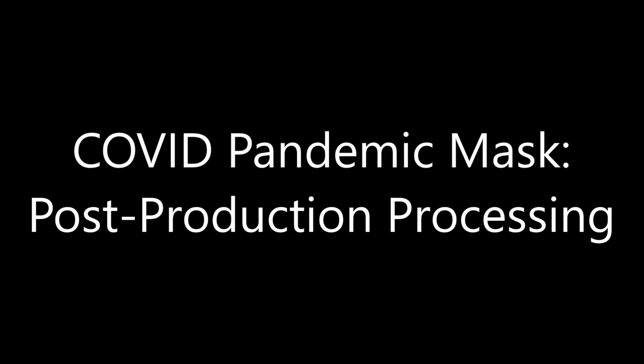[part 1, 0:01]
This is the video on post-production processing tips. We'll go through molding it to your face, sealing it, sanding or foam, and then wearing it over a surgical mask or polypropylene layer of material.
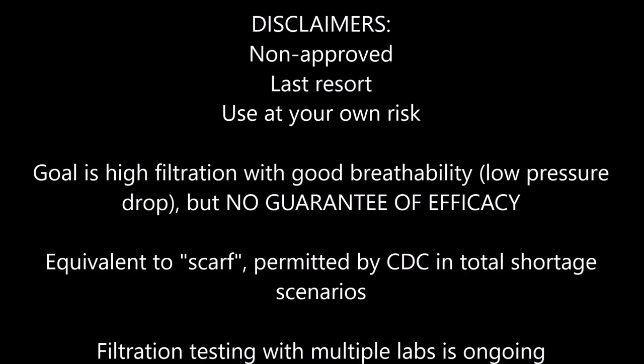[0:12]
These are non-approved last resort masks. Our goal is to make the best mask we can, but offer no guarantee of efficacy. Use completely at your own risk, and do not use if you still have any other masks available.
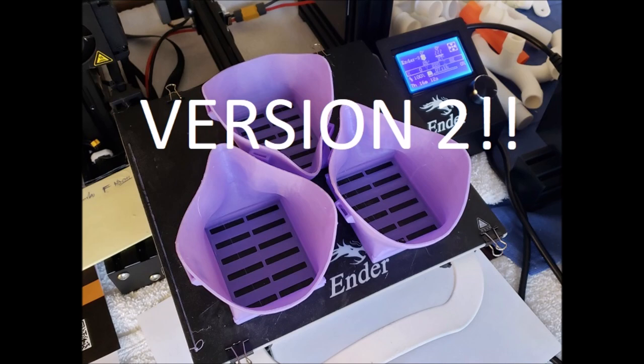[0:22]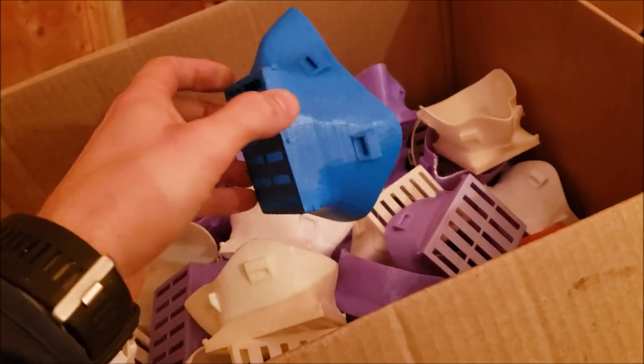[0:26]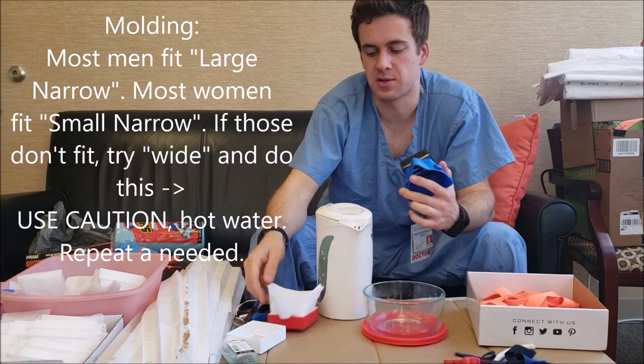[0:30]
Please see Thingiverse for version 2. It has a deeper area for your nose, uses less material, prints faster, and has two strap attachment points, among a few other changes. Okay, let's go over how to mold these masks to your face.
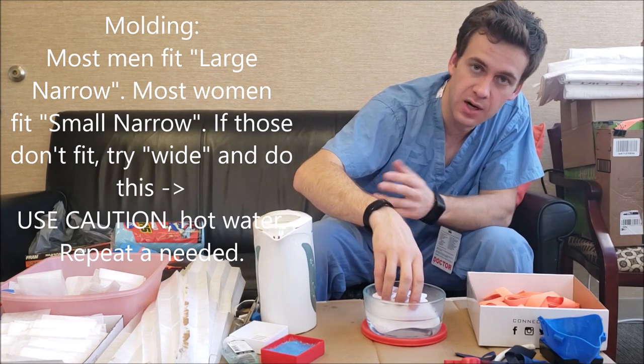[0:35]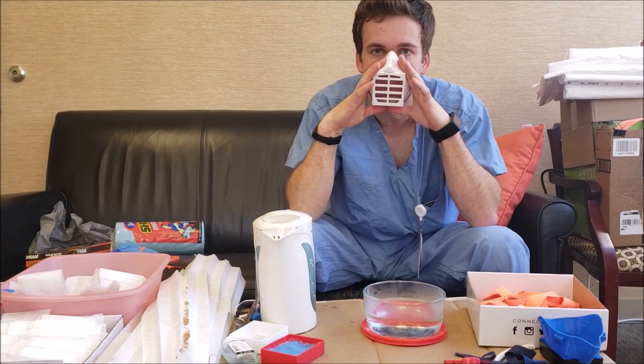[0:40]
Hot water. Submerge for 5 seconds. Be careful not to burn yourself. Now I'm just pressing the nose in and holding it there like you mold a mouth guard.
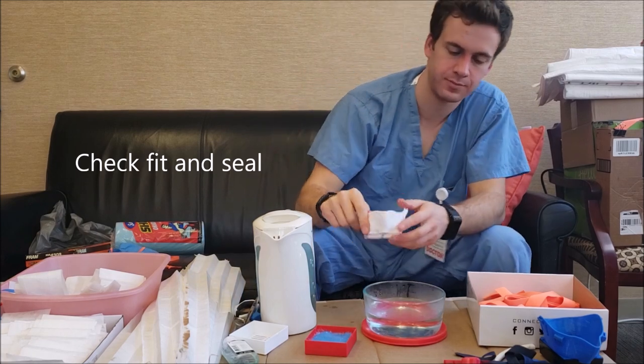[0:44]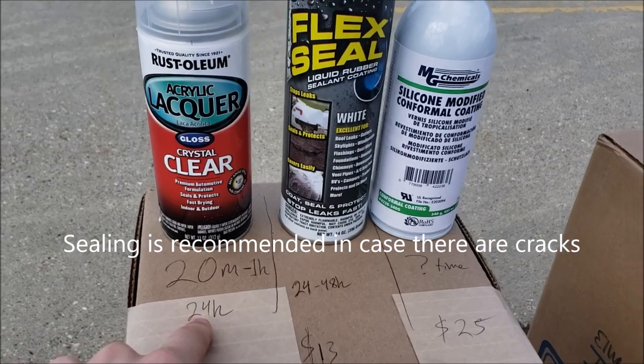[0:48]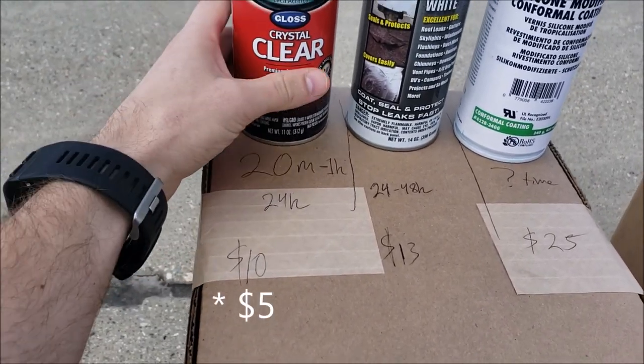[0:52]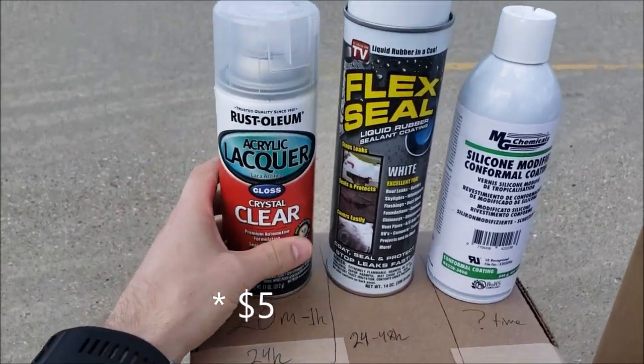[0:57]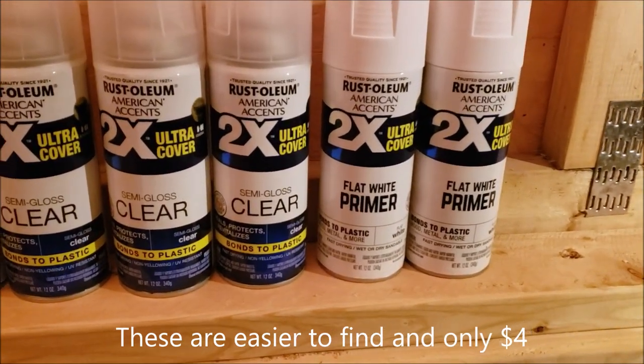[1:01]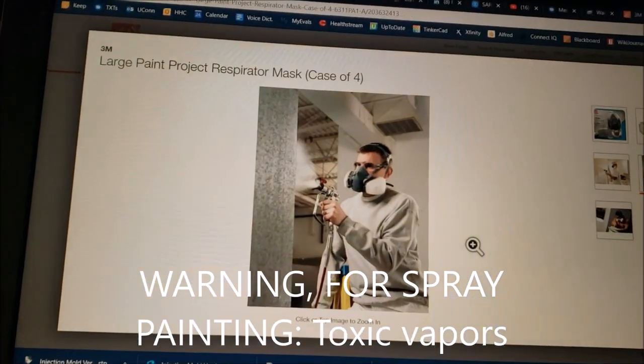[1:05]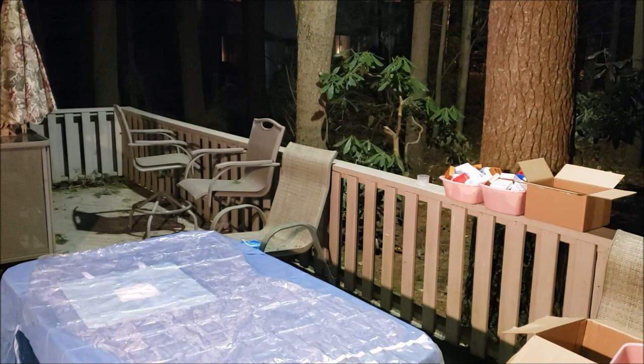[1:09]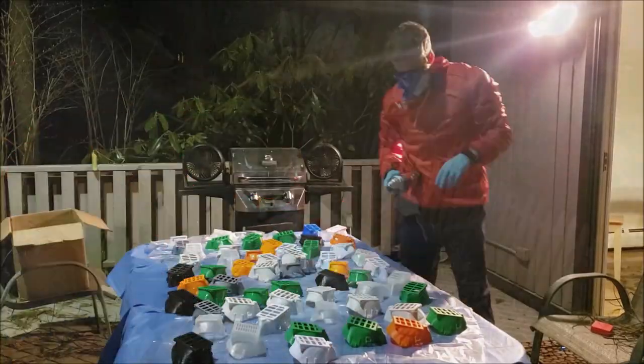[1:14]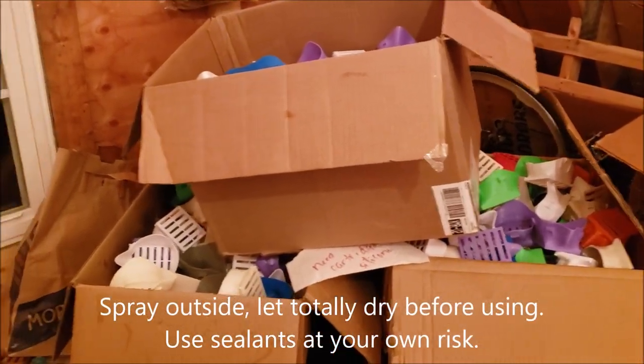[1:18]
I'm only going to put this on the outside. This is what you want, an organic fume paint respirator. They're sold out at Home Depot. Luckily, I have a breeze and I'm standing upwind. So far, these have been 48 hours, and the odor is now extremely faint. We'll probably let them go a few more days before we package them and ship them.
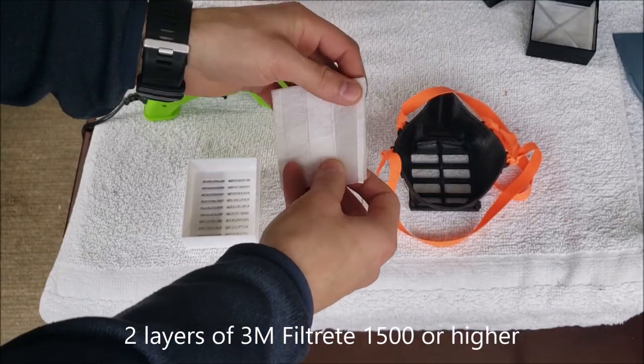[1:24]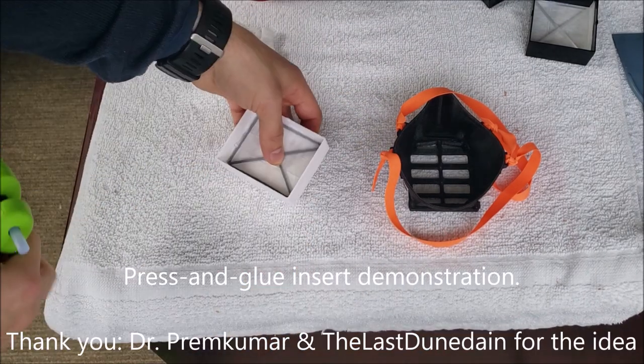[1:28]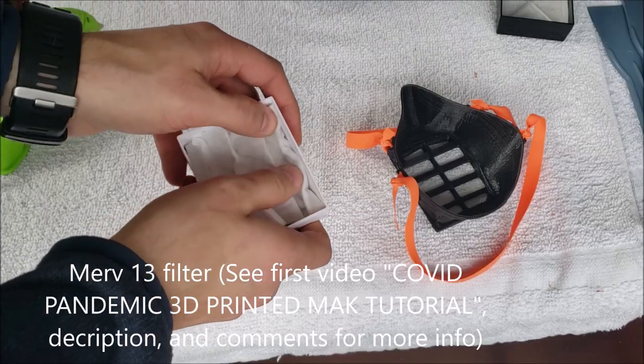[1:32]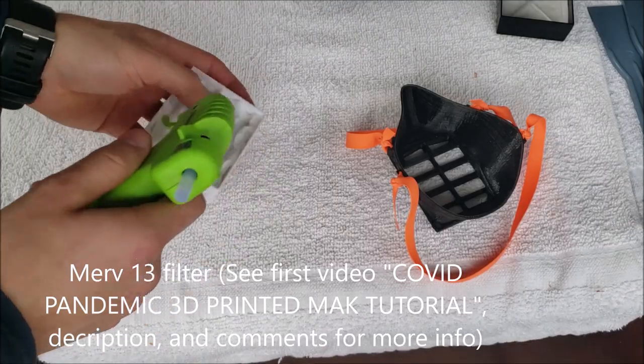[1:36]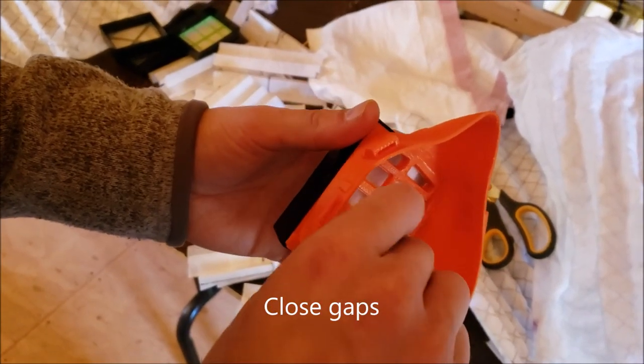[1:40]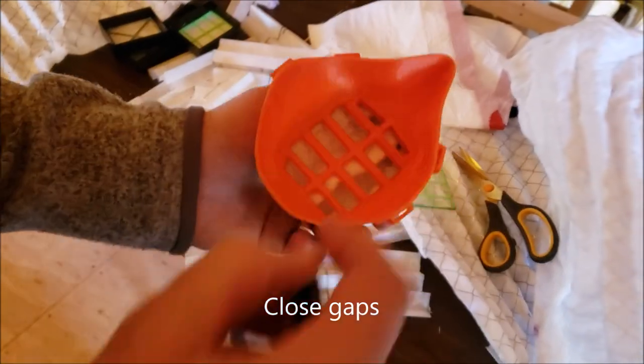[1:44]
Fold it over, or use two separate pieces for two layers. Hold that in place for a few seconds till the glue hardens. If the frame holds it right up to the edges, that should be good. Otherwise, you can seal around the edges. If there's any gaps, you can push the material from here once you've installed the filter and make sure it's right along the edges.
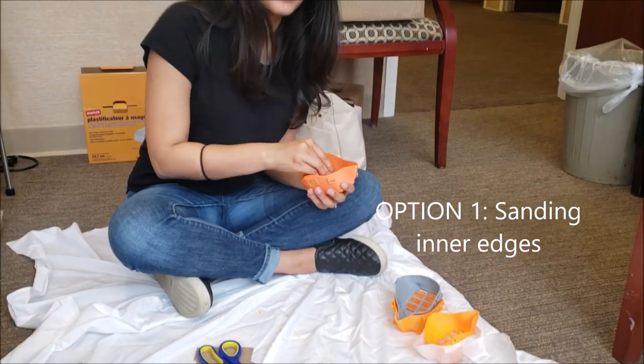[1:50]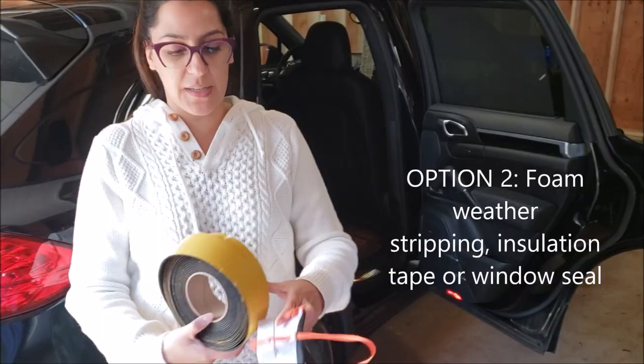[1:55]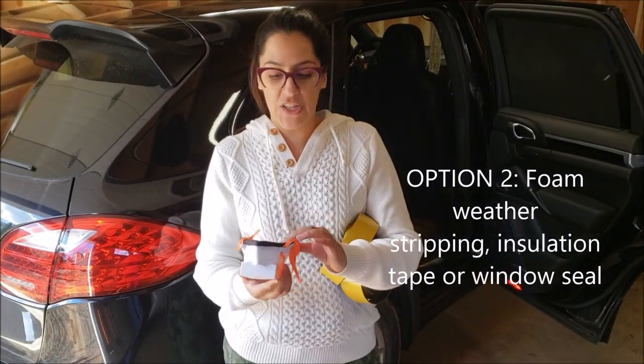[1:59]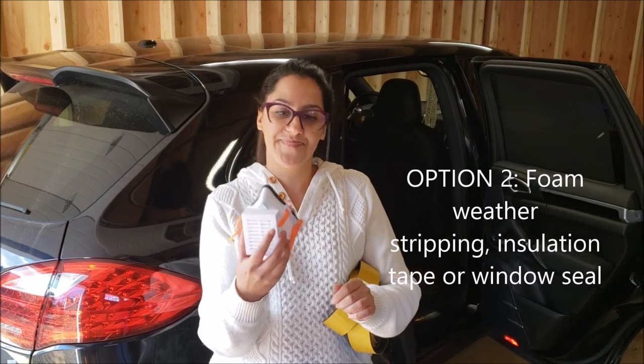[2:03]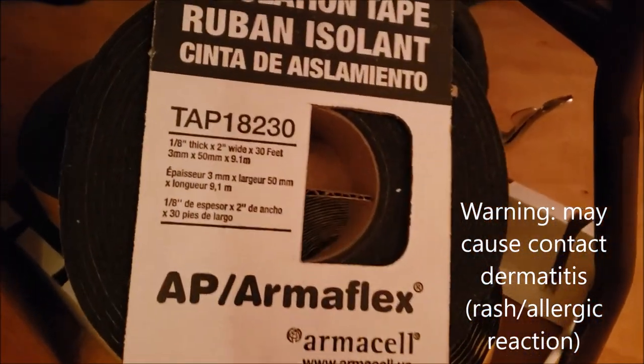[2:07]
It significantly helps comfort to sand the inside of the nose as well as the interior. Simple weather stripping from Home Depot, put it over the edge, and with this we were able to get various face shapes to pass fit testing. Awesome. The exact foam is this, AP/Armaflex TAP18230.
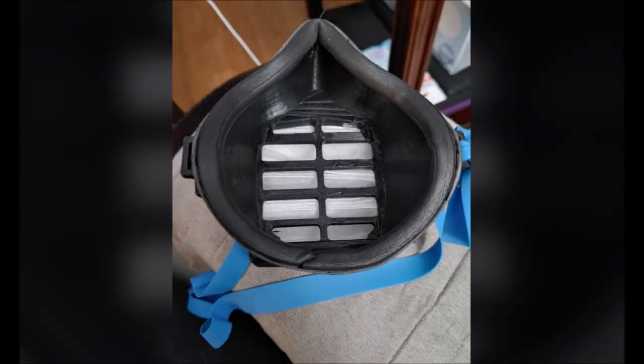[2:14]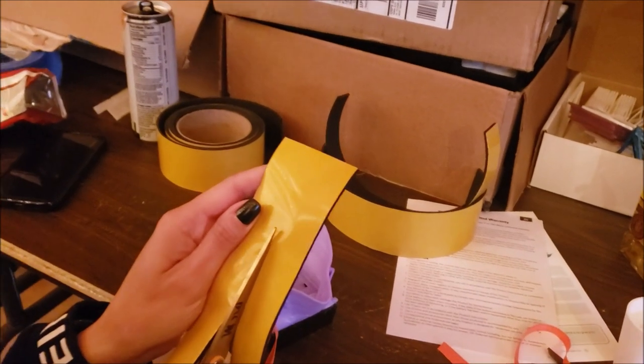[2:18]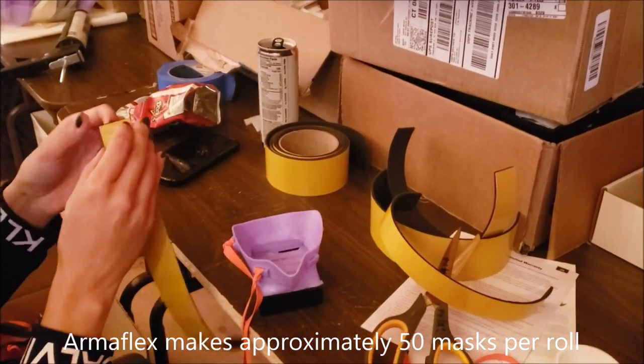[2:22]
This is another option pointed out to me by Officer Mills from the Milford PD. He's making these and sending them to Montefiore. You can make 50 masks from one roll of this on Amazon. So you cut lengthwise, measure ahead of time. This material is about $12 or $13.
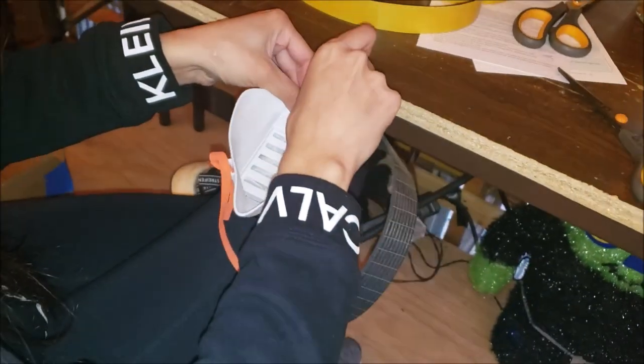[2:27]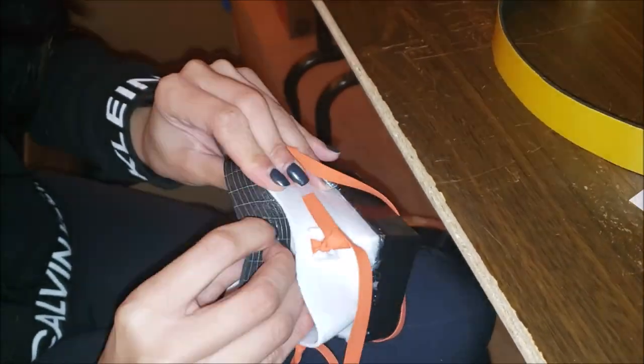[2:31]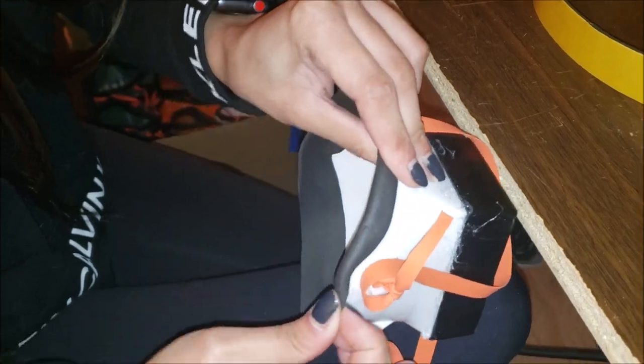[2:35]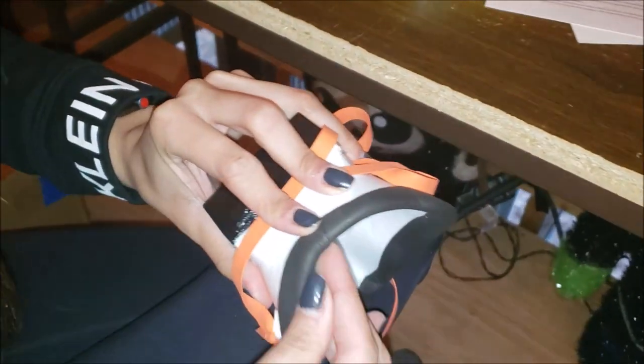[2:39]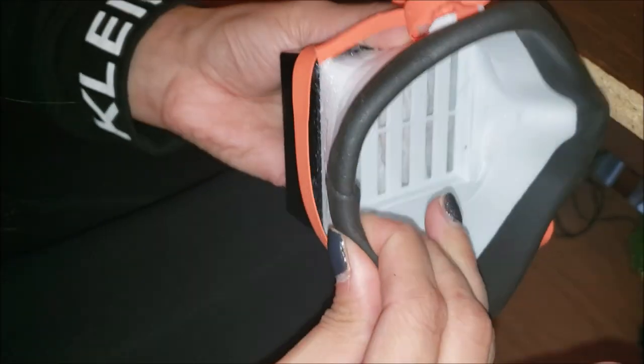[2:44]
Dr. Gill is going to show us how you install the Armaflex around the edge. So if you carefully follow the contour of the mask, you can then go around the edge and carefully fold down and press. You want to line those up perfectly or even slightly overlapped so you don't have an air gap there.
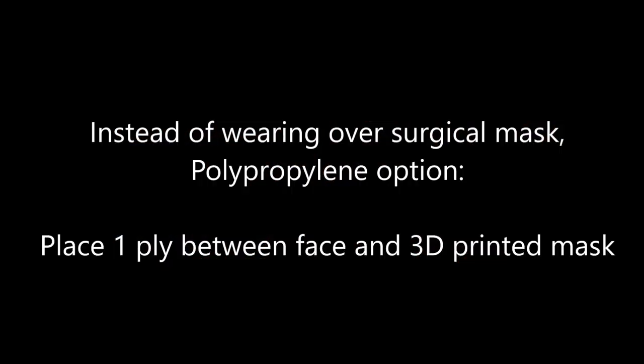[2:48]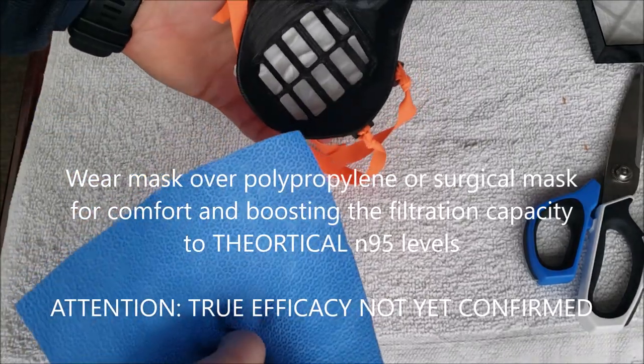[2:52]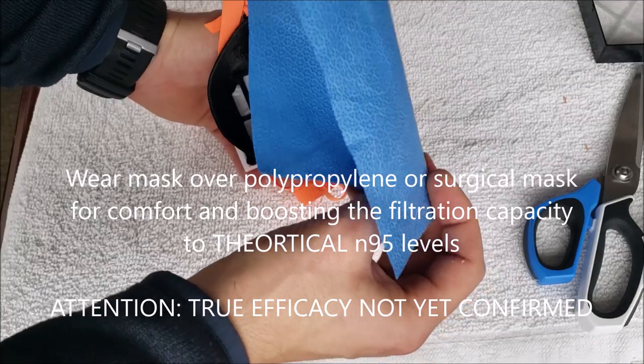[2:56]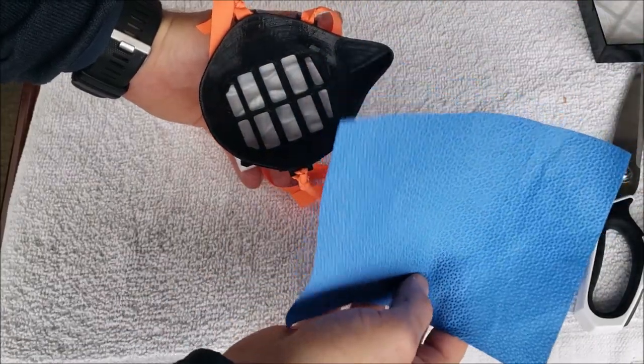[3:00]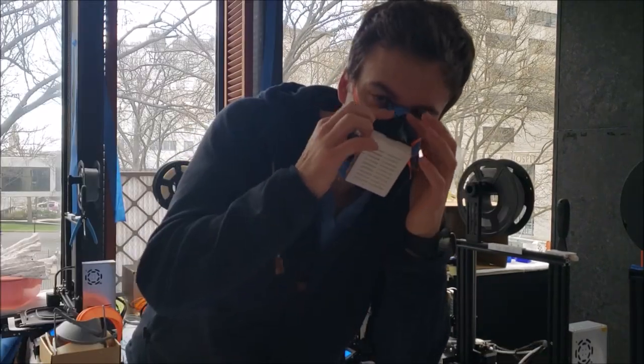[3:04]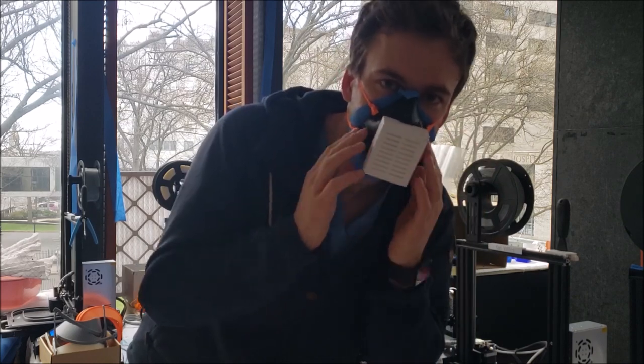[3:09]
This will help to both boost the filtration capacity and add comfort. This is one layer of a blue polypropylene material. This one is Halyard. So if you put it at a bit of an angle, it'll get in the way of your eyes less. You can have the corner in your nose, and now it wraps around and isn't in your eyes. It's fully sealed, has good breathability with no air leaks.
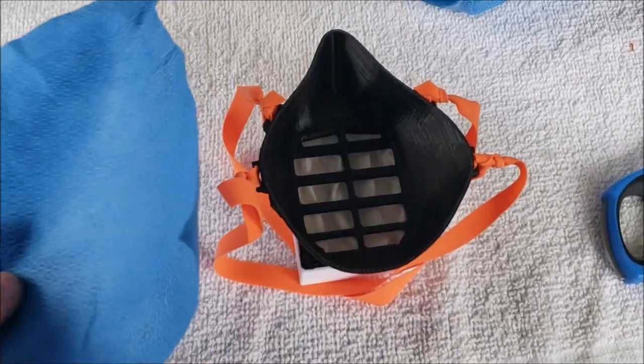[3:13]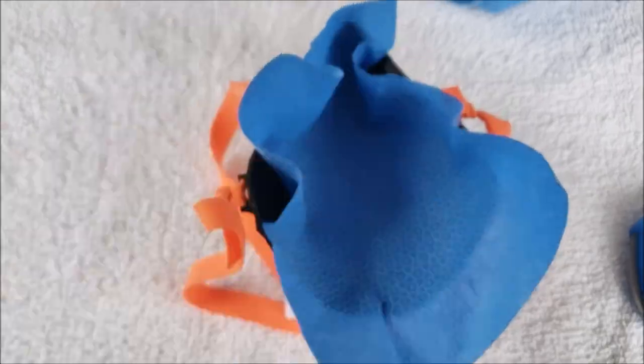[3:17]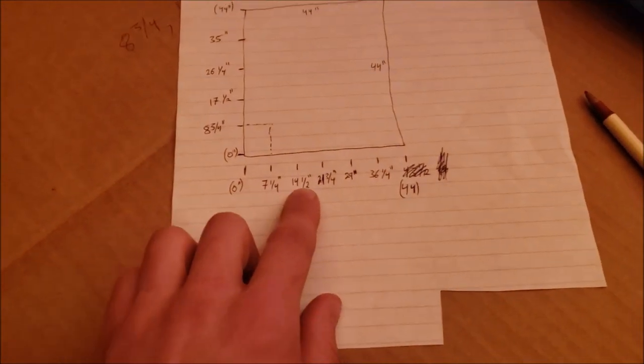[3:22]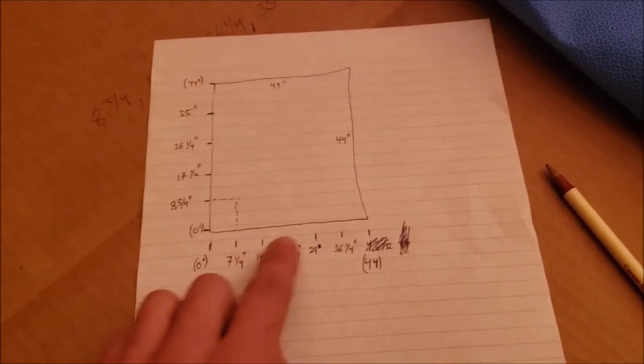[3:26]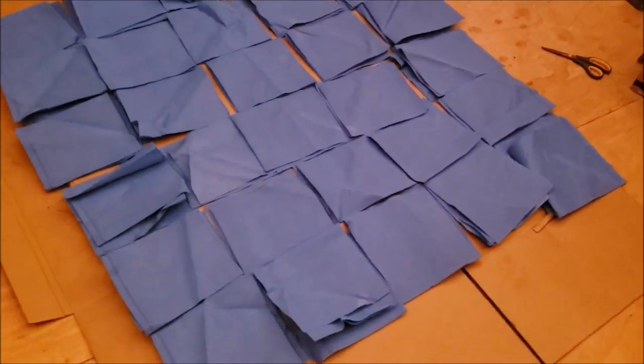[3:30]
Dr. Ali put Velcro circles on the inside and now has to re-center it on his face when he puts it on again. Mark horizontally by 7 1/4 inch cuts and vertically by 8 3/4 inch cuts. This gives you 6 by 5 squares for a total of 30. It's 2-ply material. We cut 6 plies at a time.
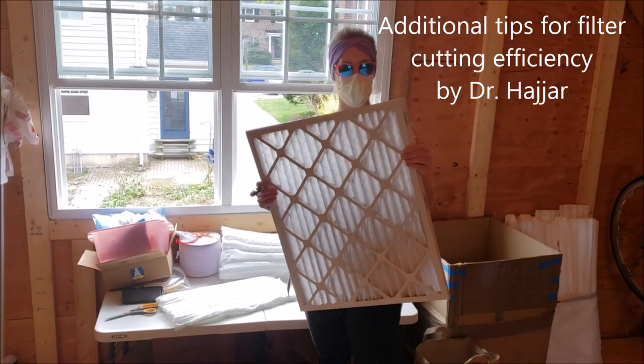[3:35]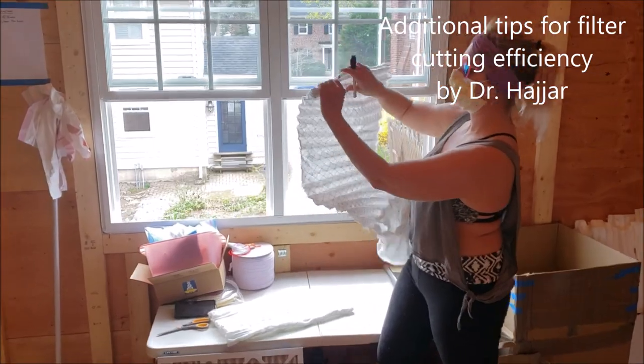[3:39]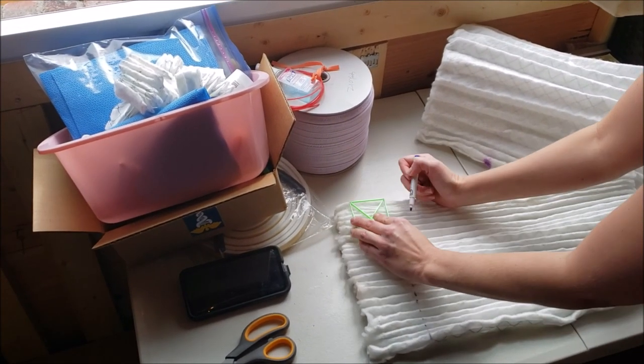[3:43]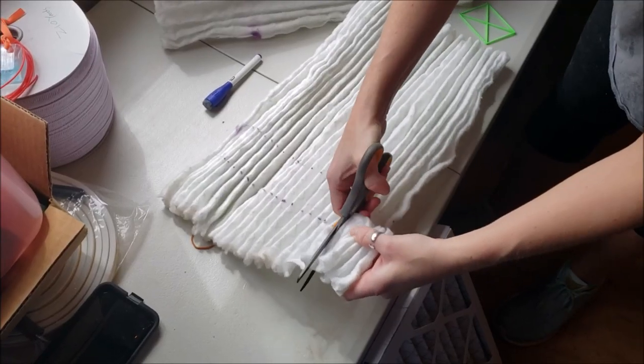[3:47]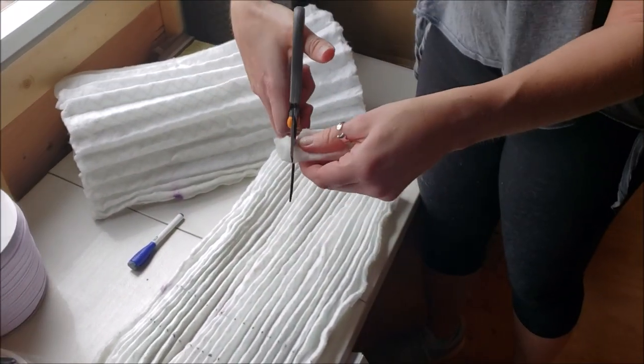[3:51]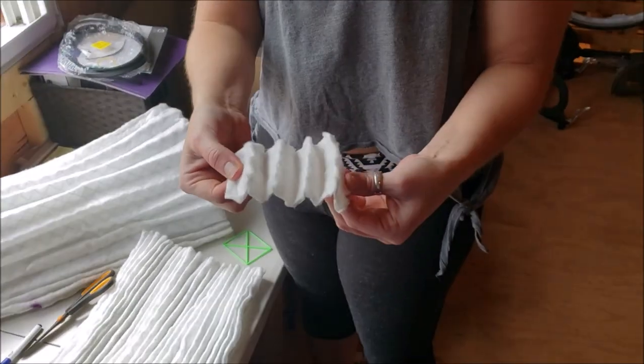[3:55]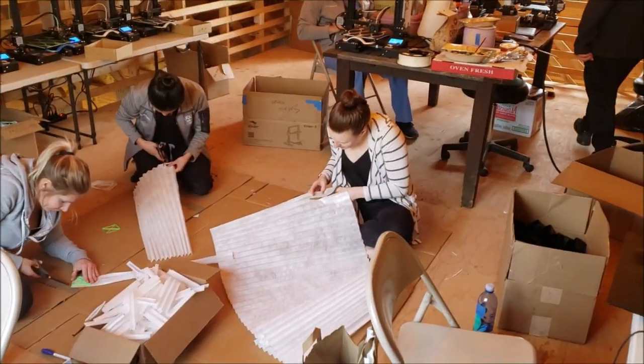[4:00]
You're going to take off the cardboard. You're going to end up with a sheet that looks like this. Squish it back together. You'll be able to go along the whole line. You want it to be about 4 layers here. And only because this is the first row, you're going to cut off into the middle. So you'll cut here. And there you have the inside of your filter. Why do they have to go by the middle?
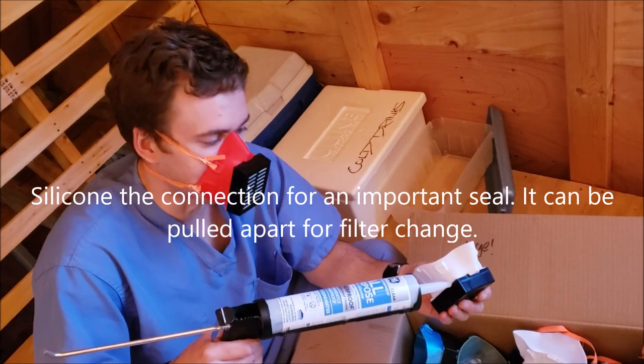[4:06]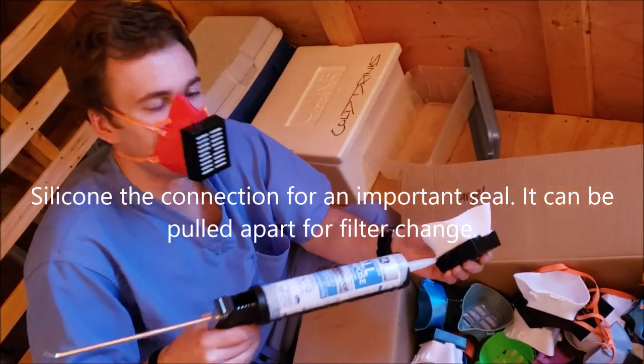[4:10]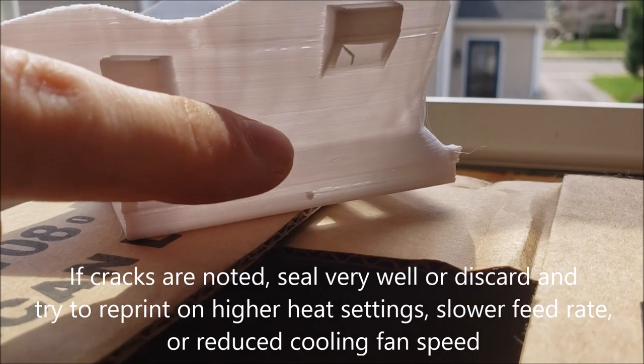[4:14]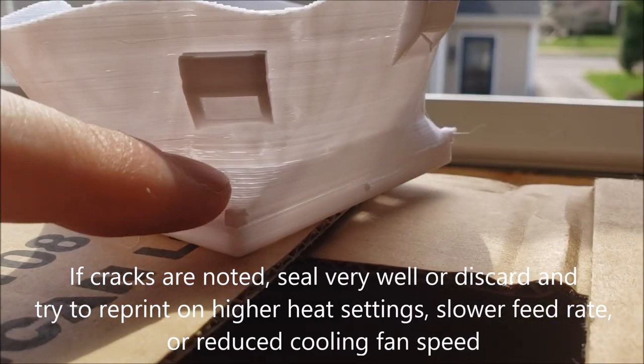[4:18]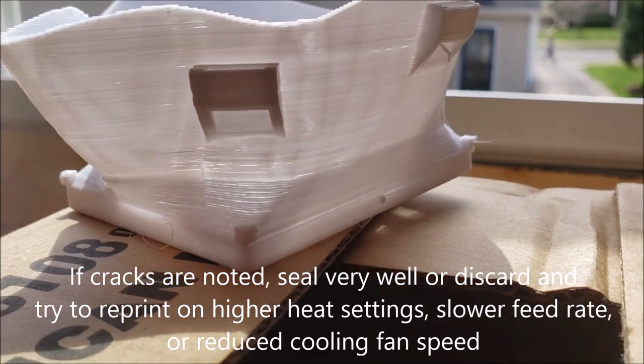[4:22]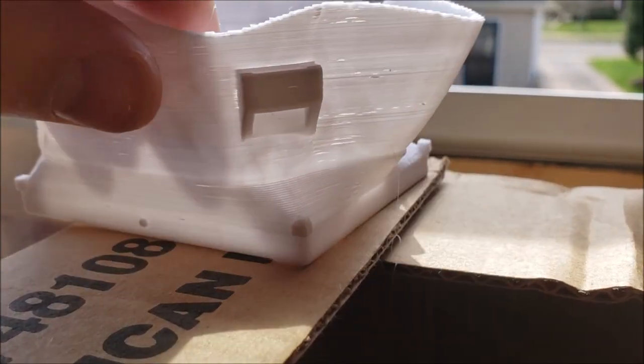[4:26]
Tiny seal of silicone just around the crack to make a temporary seal, fold it in place, and also make sure there's no air leaks. The layers are looking good, like in this section, then the sprayable acrylic is enough. But if you're having any separation here, we actually think that taking silicone and painting or spreading it on with a gloved finger and sealing all this up is your best bet.
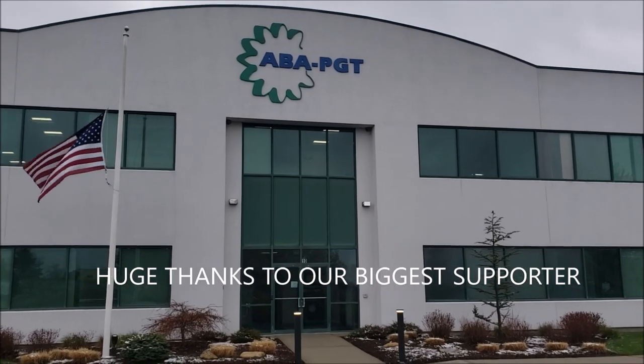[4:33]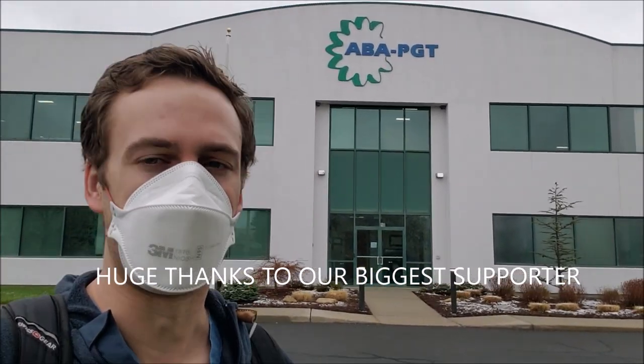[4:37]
I mean, it's totally green. Solar panels. Yeah. This is ABA PGT in Manchester, Connecticut. They're injection molding the filter boxes for us, thousands at a time, helping us redesign them to have a press fit mechanism without glue. And with their permission, I'm going to film a little bit of footage of what's going on inside this building.
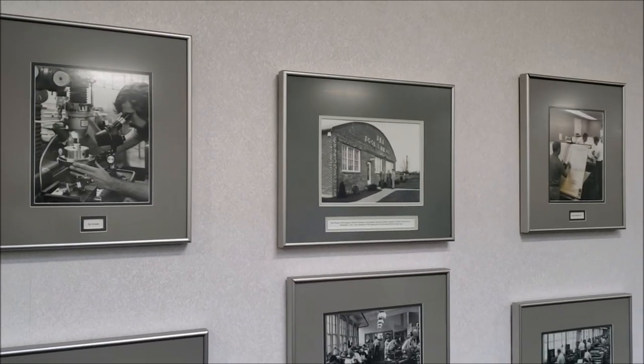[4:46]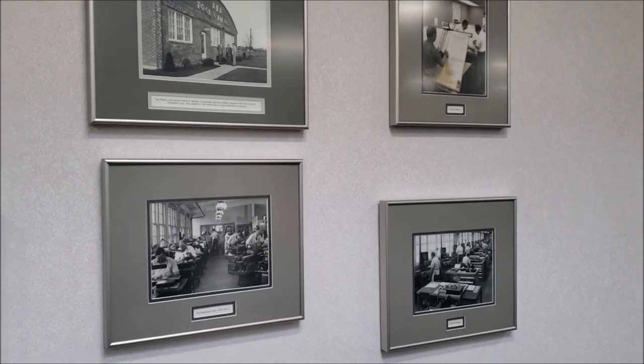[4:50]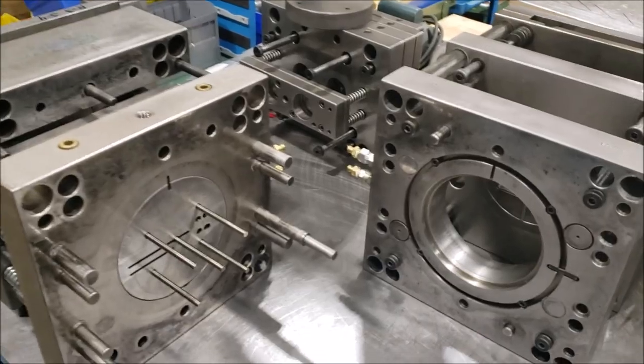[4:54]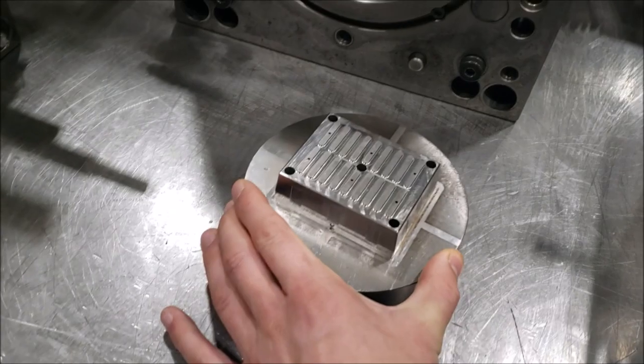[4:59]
This company's been here for 75 years, and they're the first company in North America to mold a nylon gear. They do precision gearing. While the machine's going, look at the size of the tool just to make this part, that's our filter box. A lot goes into injection molding.
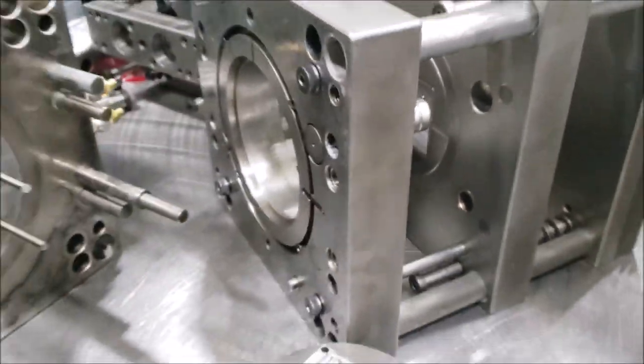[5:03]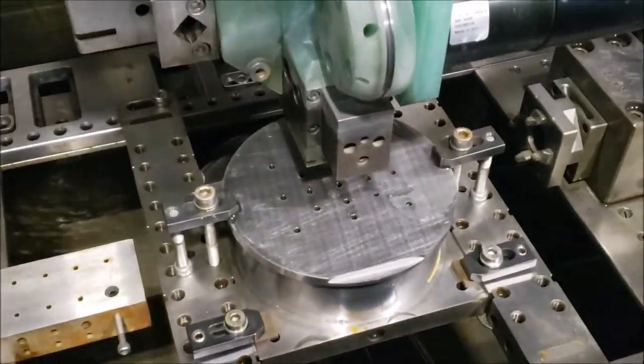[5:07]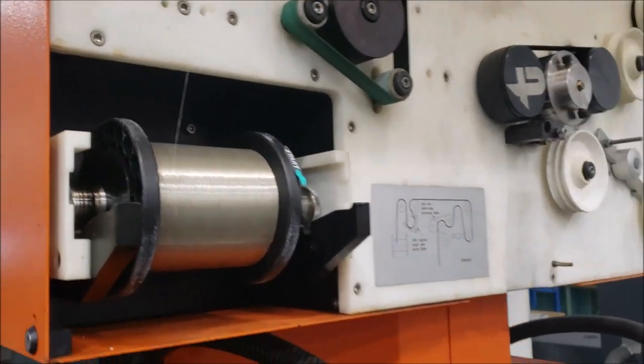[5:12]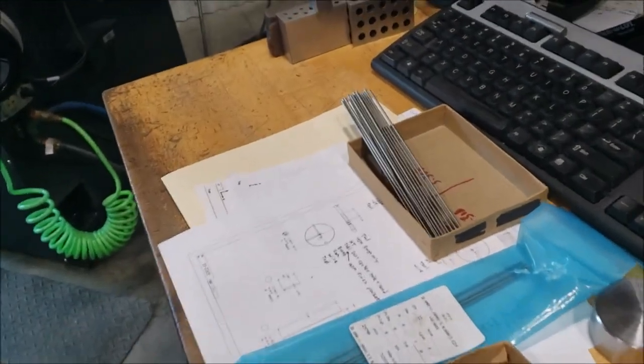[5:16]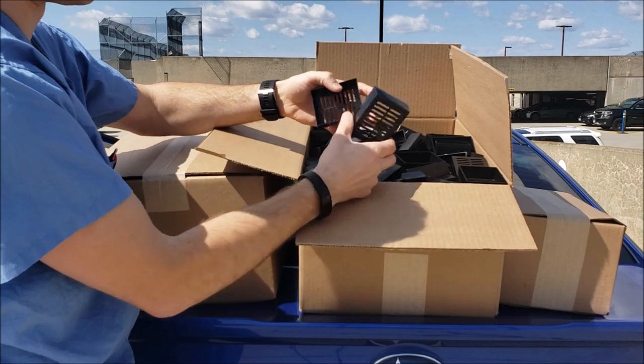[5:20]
Creating the holes for the knockout pins that push the injection molded part out. It goes through and actually cuts the metal. These will come forward, knock the part out, and go back. Look at these. They can make one every 30 seconds of these.
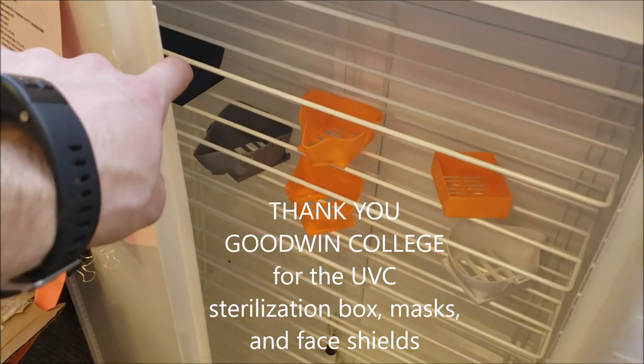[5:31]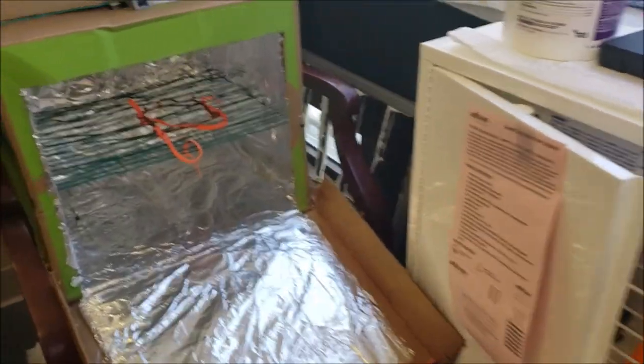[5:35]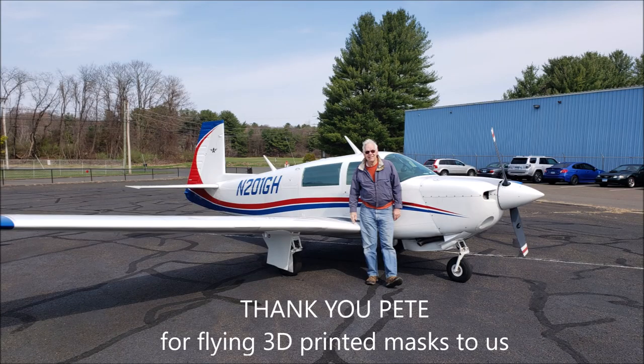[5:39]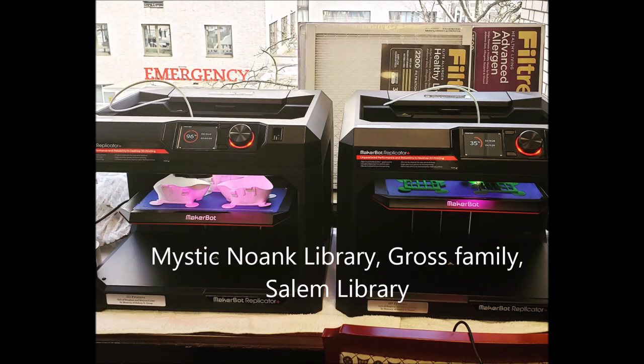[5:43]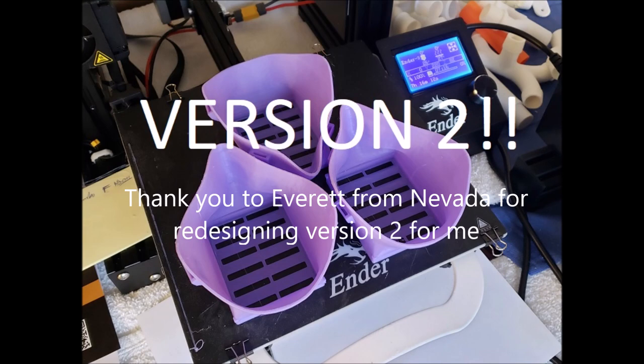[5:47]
We've got a UV light sterilization box that's on loan to us from Goodwin College. Thank you so much. And here's one that our residents built. This is Pete. He flew masks up to us that he'd 3D printed with a friend. Thank you to Mystic Noank Library, the Gross family, and Salem Library for loaning us printers. Thank you to Everett for massively assisting in redesigning version 2.
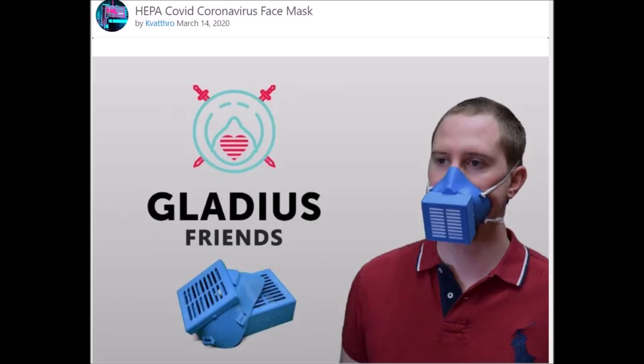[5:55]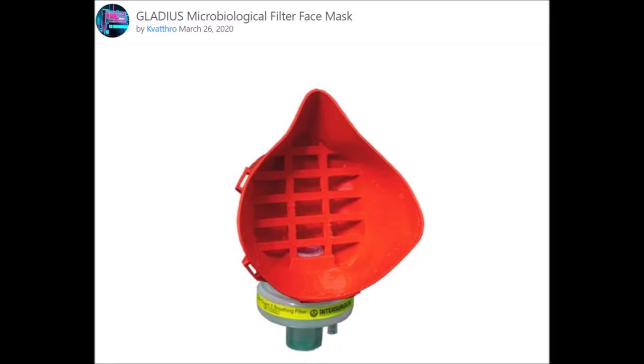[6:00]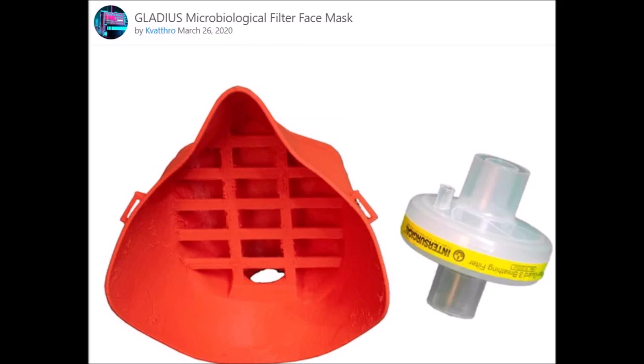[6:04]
It has been a pleasure collaborating with the original creator of the files that I started with for my mask. This is David from Slovenia. He's also making the Gladius Heroes now that uses a ventilator filter for really high levels of filtration, over 99.99%, with a good seal at 5 bars of pressure.
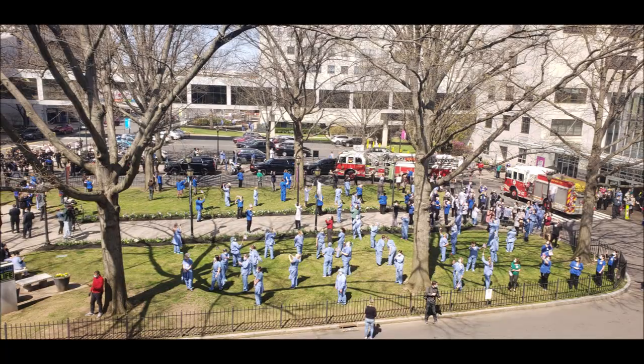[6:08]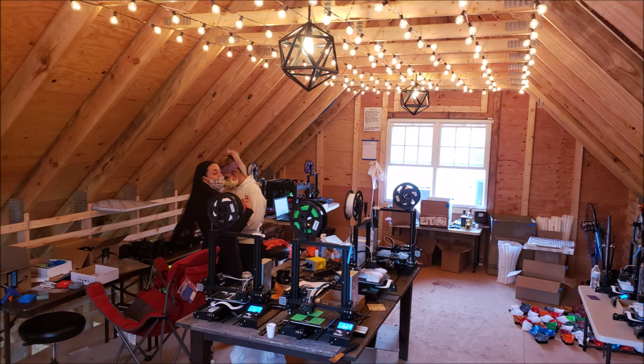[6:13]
And finally, thanks to all the residents, attendings, nurses, administration, friends, GoFundMe donors, Boy Scouts, robotics teams, firefighters, and everyone else who supported this project.
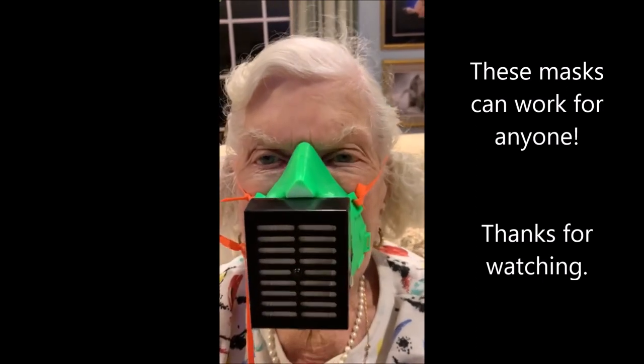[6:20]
She's got me all tied up here.
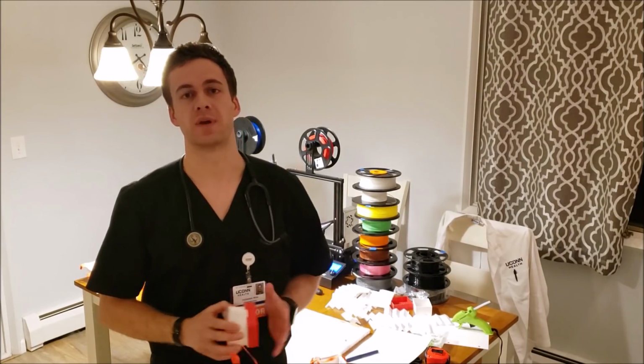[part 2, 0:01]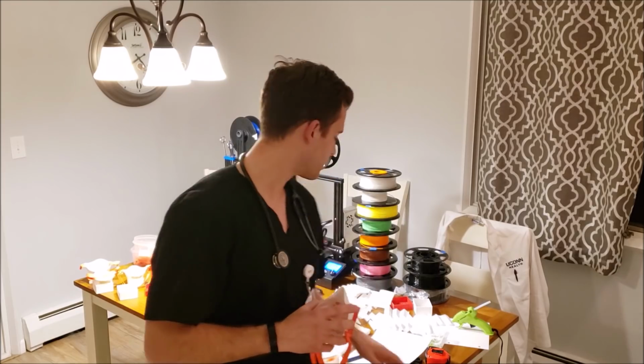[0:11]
To fight the PPE shortage, you can download my open source 3D mask files below, and this video will show you how to print them and fit them with commonly found filters. Due to the COVID pandemic, the CDC is allowing homemade masks. However, you have to use these at your own risk.
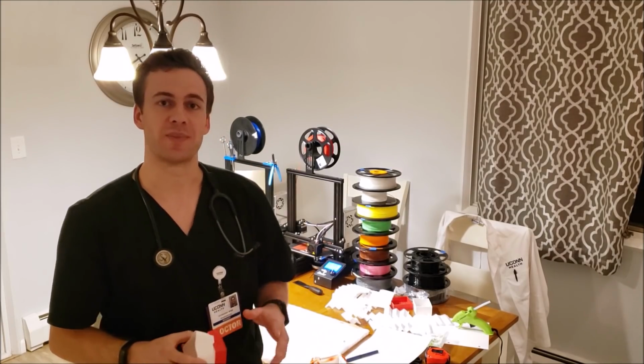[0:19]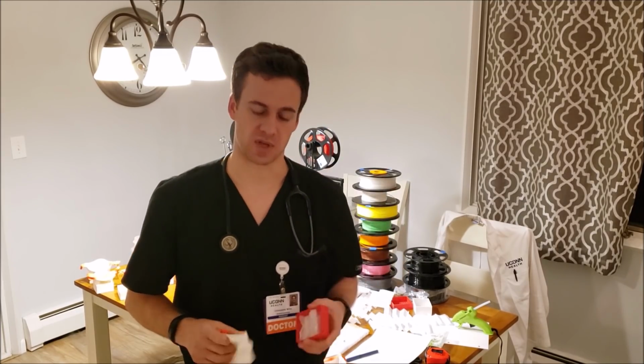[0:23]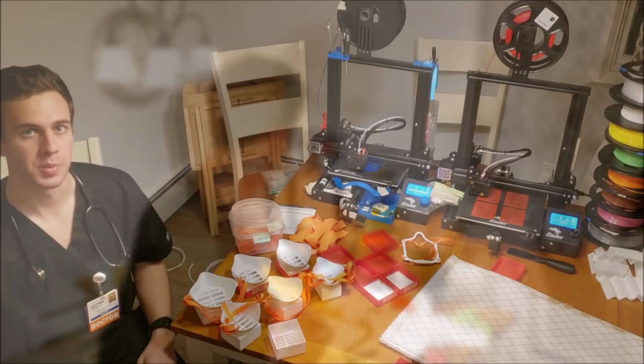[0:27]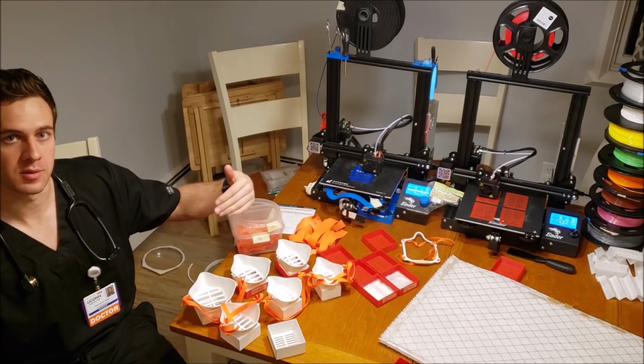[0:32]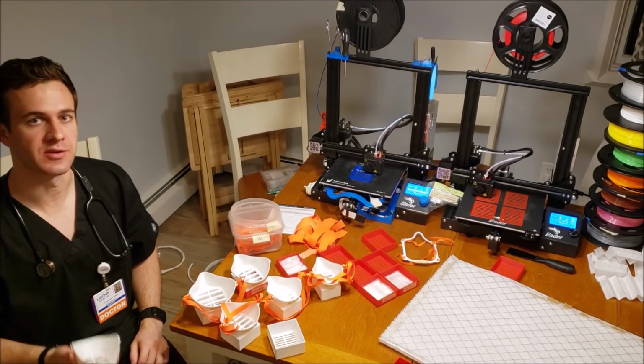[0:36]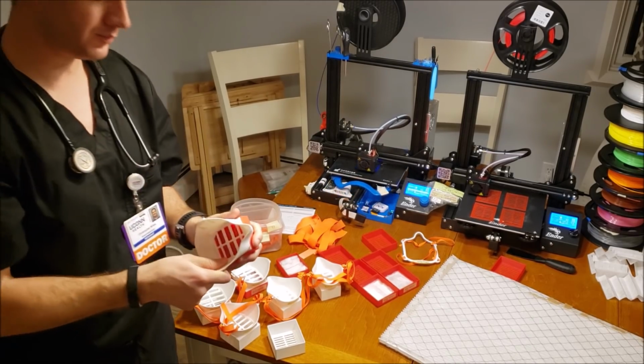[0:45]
I suggest using Ultimaker Cura. You'll be printing a mask, a cover, putting filters in the cover, and putting straps on. We'll go through it from the start right now. Open the folder you downloaded. Pick the size mask you want, wide, medium, or narrow, male or female. Print it, see if it fits well. If it does, you're also going to print the corresponding size. Place these together before doing anything else to make sure they're a good fit.
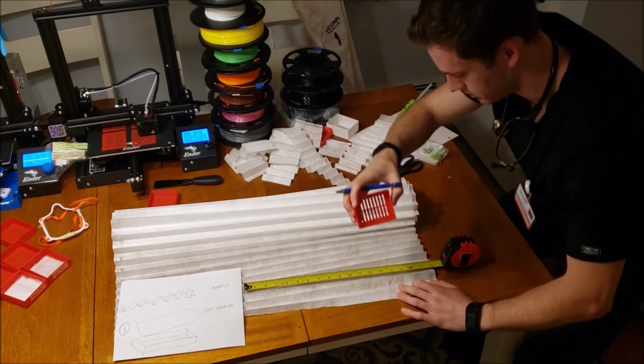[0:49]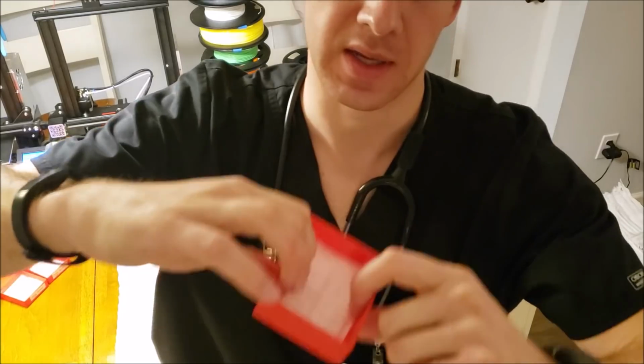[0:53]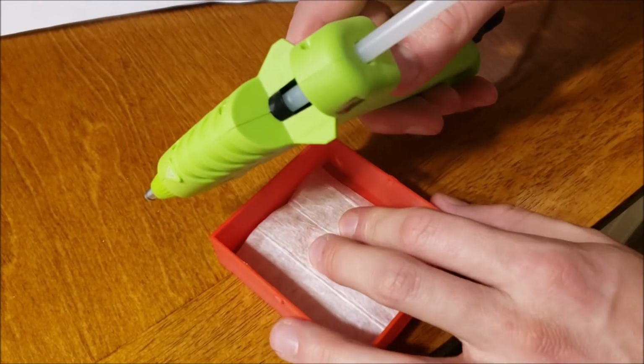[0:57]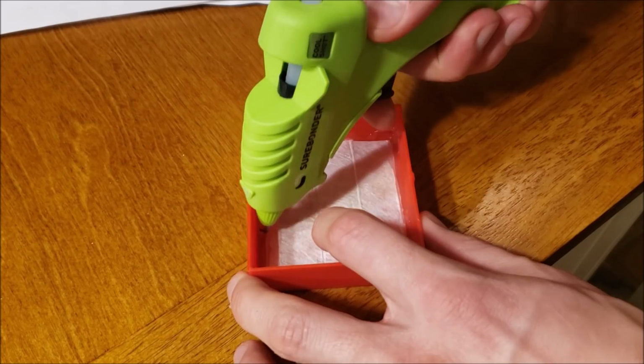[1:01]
So what you want is a piece that's going to fit flat right inside of this. You can cut a little bit smaller so that it lays flat, and then you can glue gun easier on the edges. Here you purchase a cool temperature glue gun. This one is 145 degrees Fahrenheit. I got it for about $7. Seal all the edges.
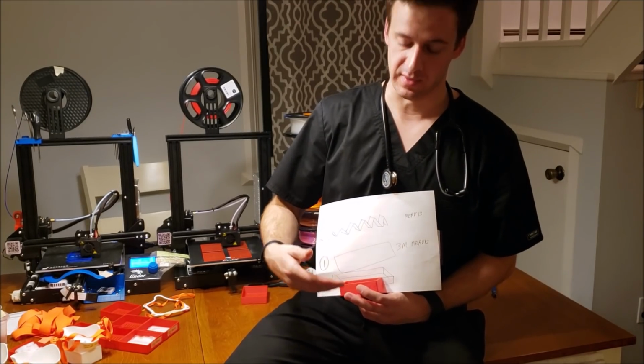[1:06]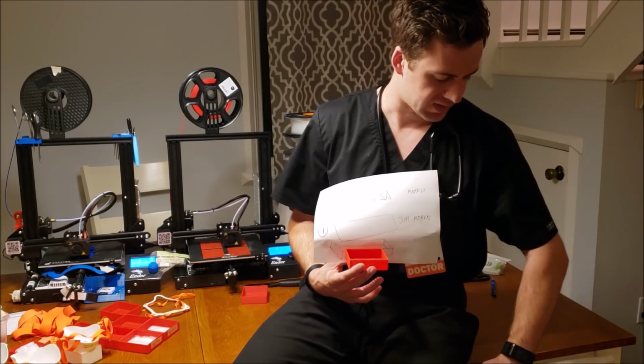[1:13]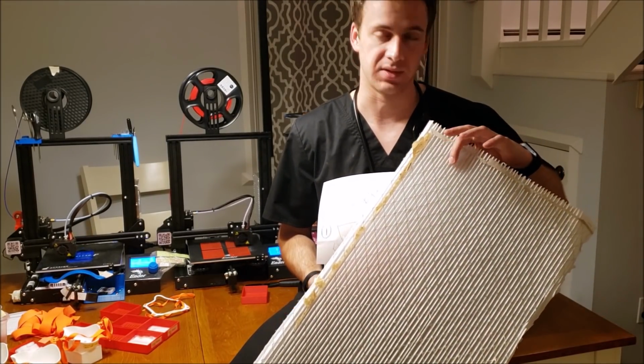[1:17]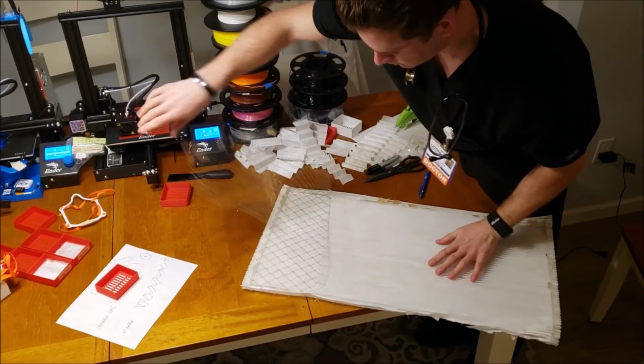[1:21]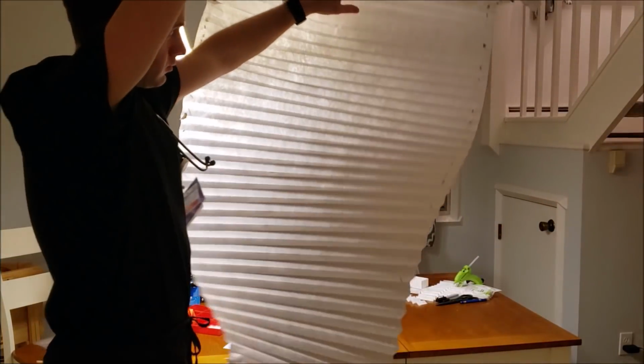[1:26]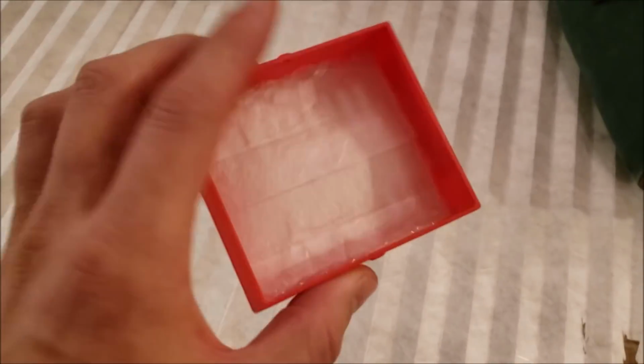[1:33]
First, do one layer of 3M MERV 12 rated material. Now this is just what we did. You can get creative, but the 3M specifically makes one where the metal is not interwoven with it. It's on top and it pulls right off. So this is how easily this one comes off. It is sharp, so watch your fingers. Do 240 of these for 6 cents each out of this one piece. You could double up, but we're using one layer and gluing it in as a droplet filter.
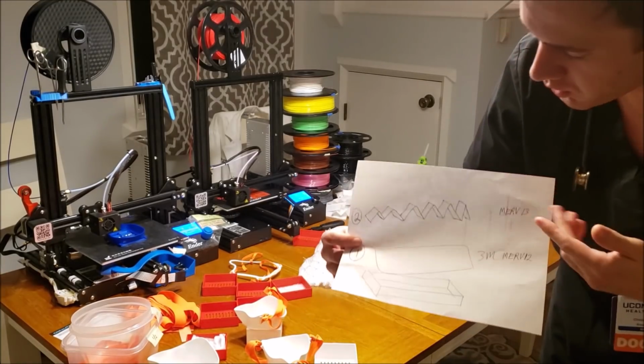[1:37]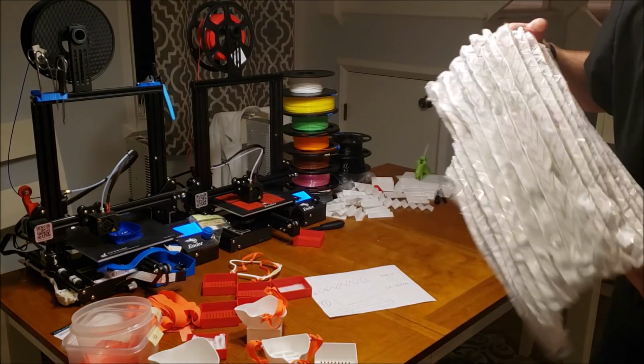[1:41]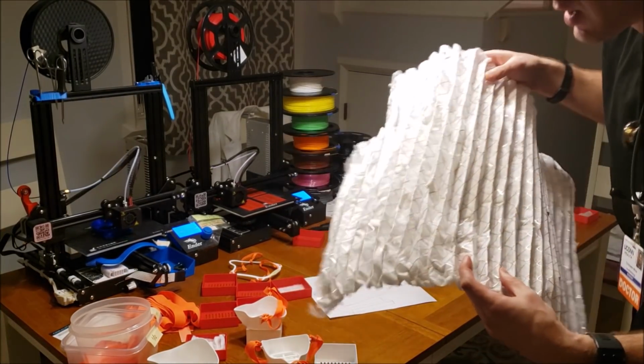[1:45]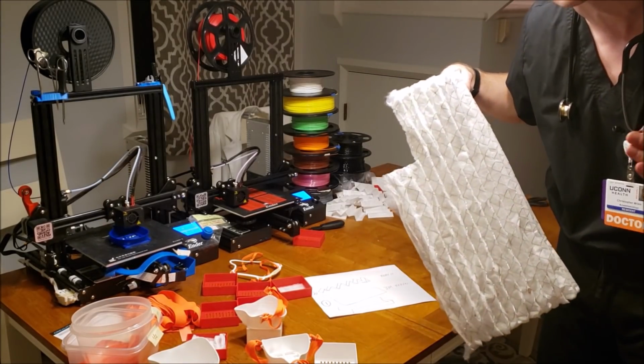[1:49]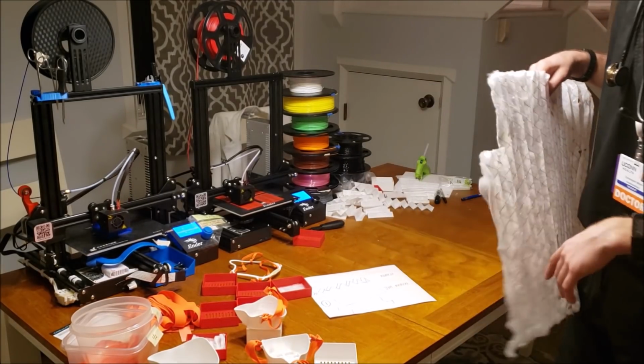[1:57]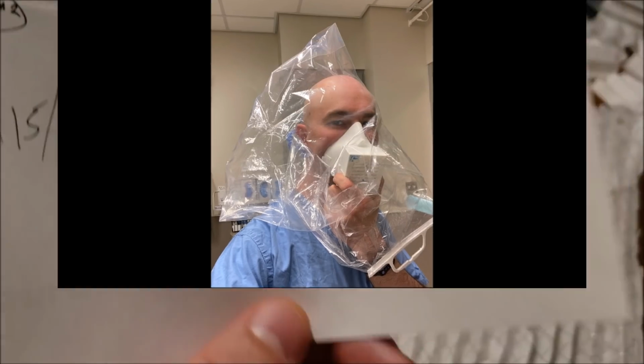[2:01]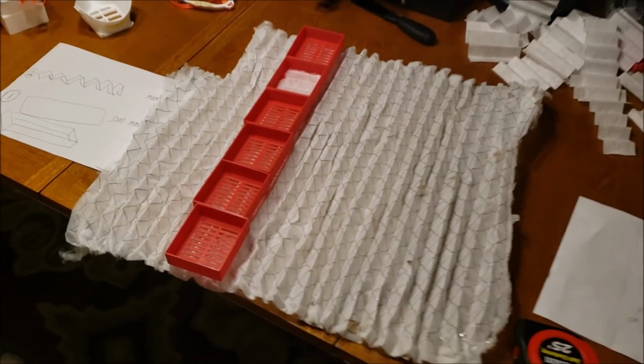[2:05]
For layer two, we're using MERV 13 material. It has metal throughout it, so it maintains the ridges. So when you put a layer of this in, it has a lot more surface area. That being said, while this does block viruses, there is a higher level MERV 16, which would work even better, but it's much more expensive and harder to find. So use your discretion about which you prefer to go with, and feel free to modify however you think is best. This combo does pass fit testing.
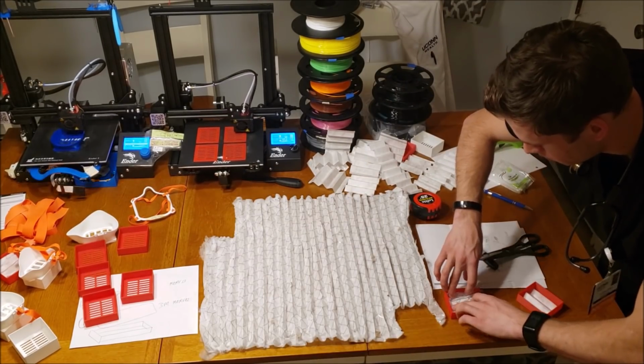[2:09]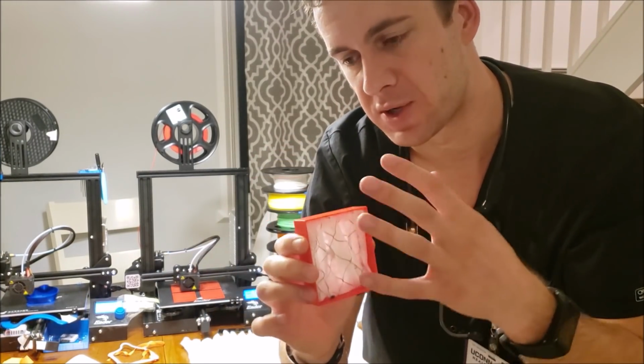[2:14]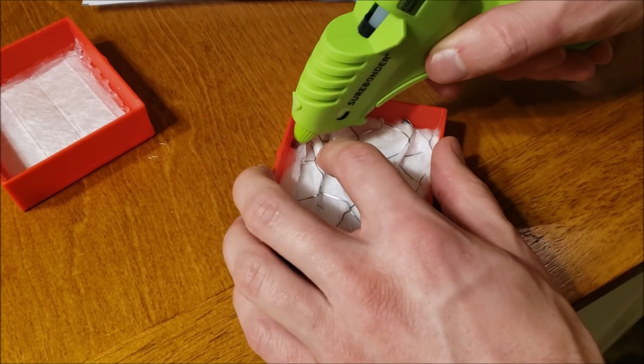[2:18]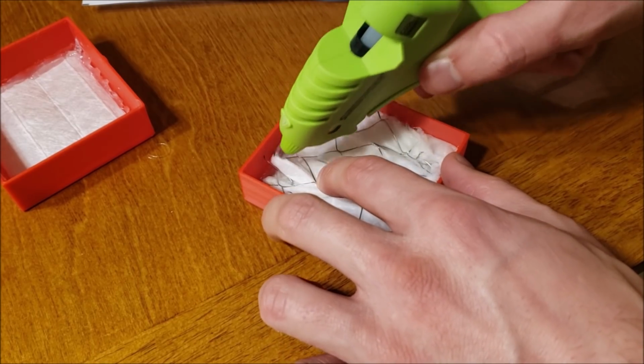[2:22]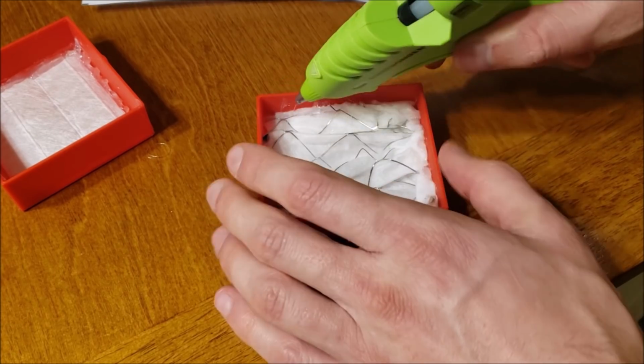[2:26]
I was able to get 48 of these out for 31 cents each. The metal does hold it in place, but I would suggest a little bit of glue just to make sure it doesn't get dislodged. You don't need a perfect seal because the bottom layer is already having a seal to stop the droplets. You can think of this as just an extra step, and it is actually optional, but I suggest tacking it in place for extra security.
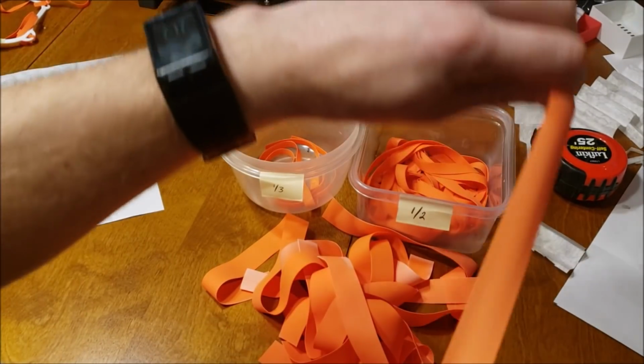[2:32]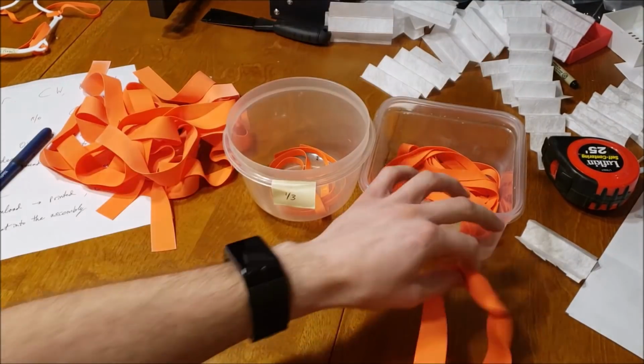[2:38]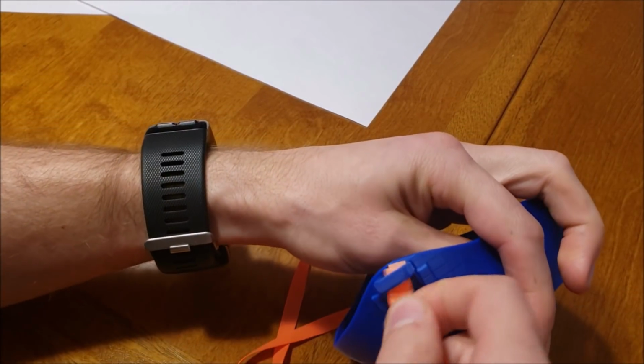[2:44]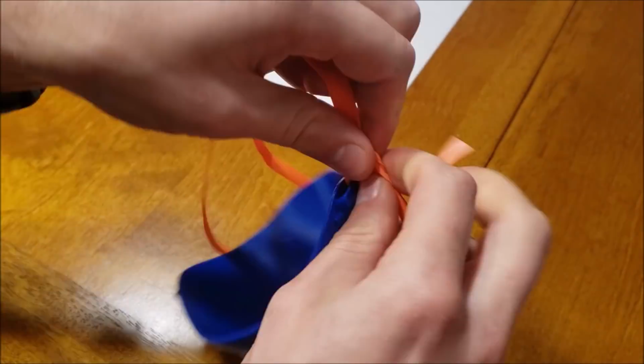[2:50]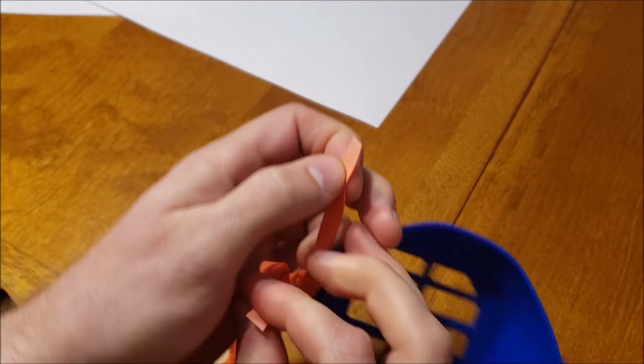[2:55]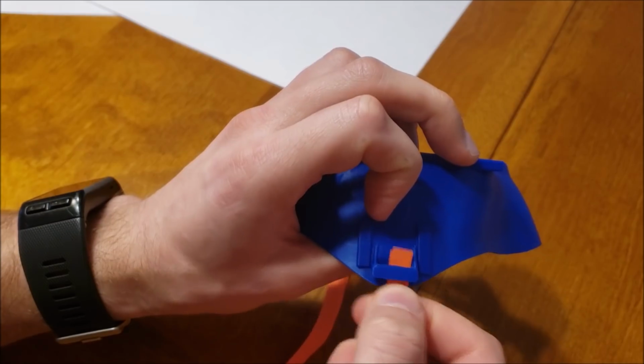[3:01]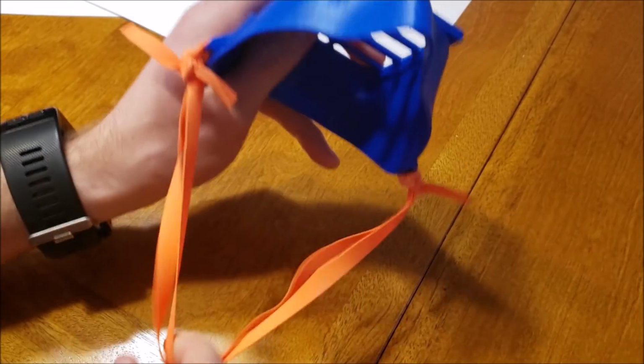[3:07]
If you work in a hospital, you recognize these. These are phlebotomy or IV tourniquets. They're stretchy. We're going to use these as the straps for around your head. I've tried thirds and halves. I like cutting into thirds. So what you can do is you can put these through, it doesn't really matter the direction. You come through, and do one loop. Take these and wrap around either side of it, and do a square knot. Just go through here. So we're going to take these two.
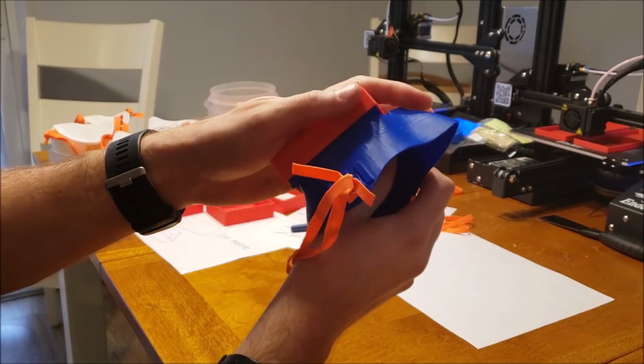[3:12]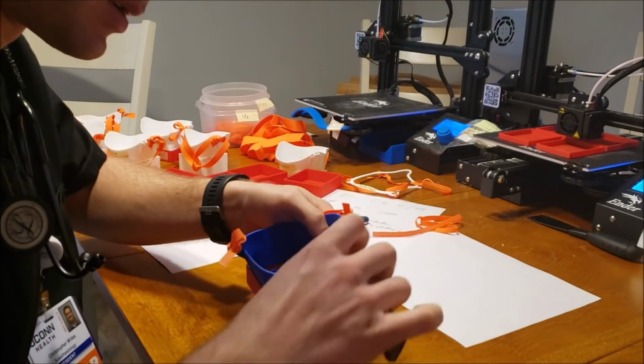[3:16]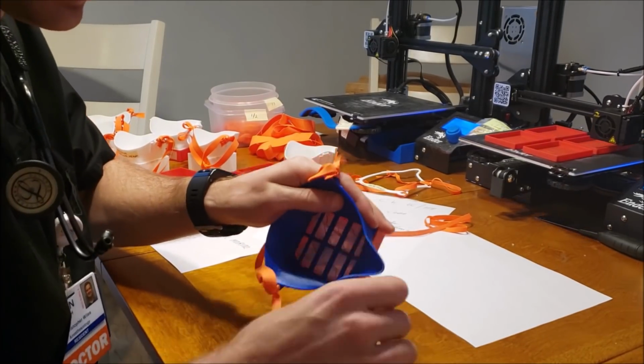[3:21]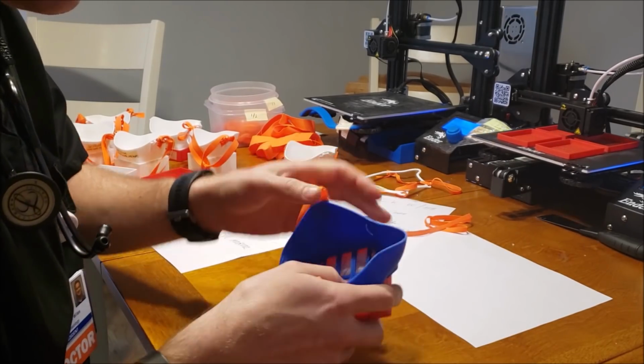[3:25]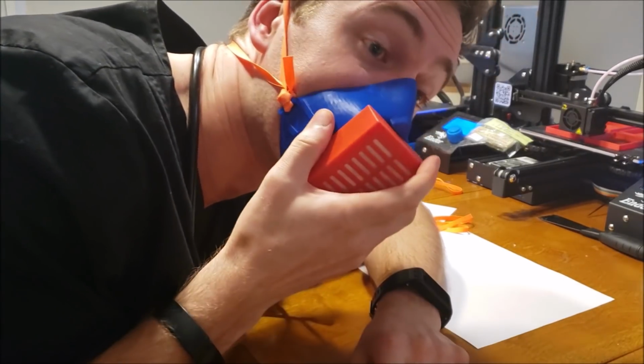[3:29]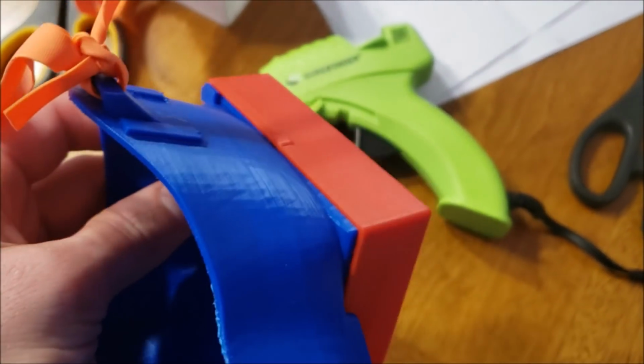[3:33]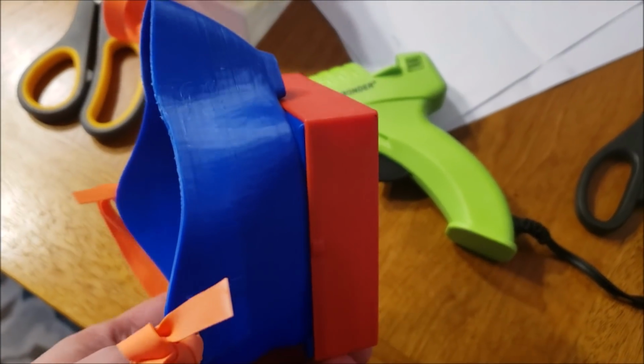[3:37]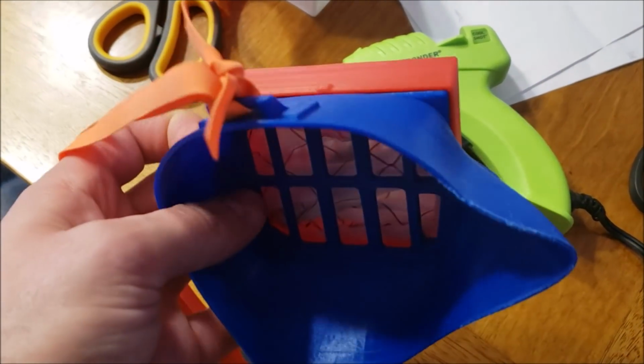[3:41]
Fits in the nose slot, you push it until it clicks, and take some sandpaper and just do a little bit around the tip of the nose, and that's about it. That smooths it right out. It should fit like that. You can use the glue gun to go around the edge if you want and make it a permanently sealed unit. I choose not to, so I can replace my filter depending on how much heavy usage it will be getting. And then I wipe the mask down with bleach.
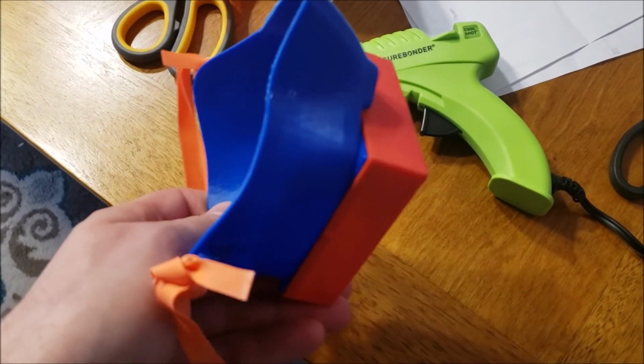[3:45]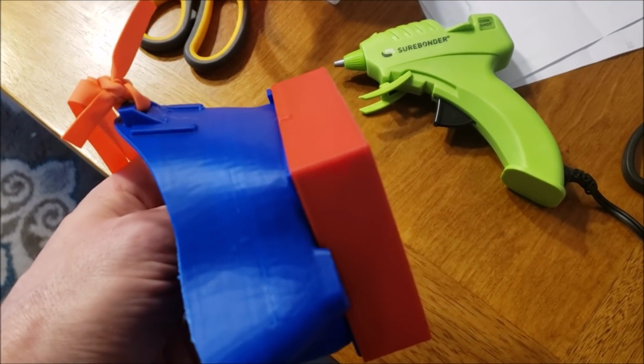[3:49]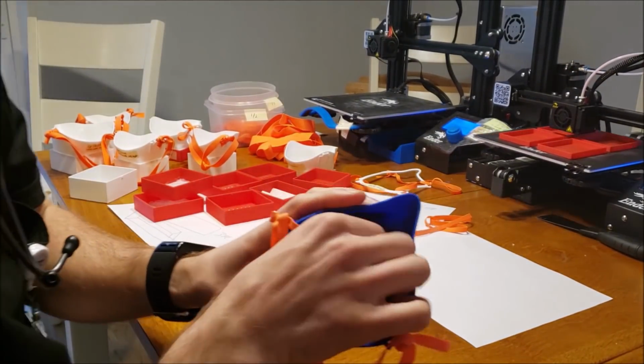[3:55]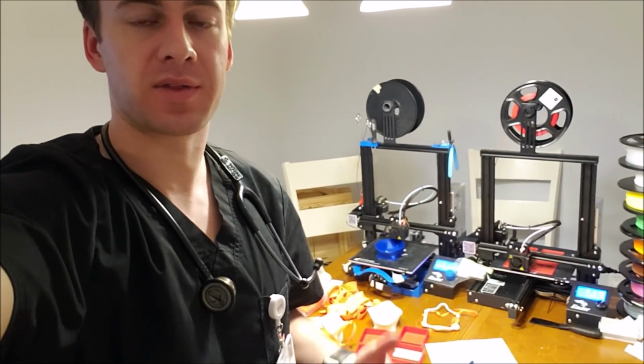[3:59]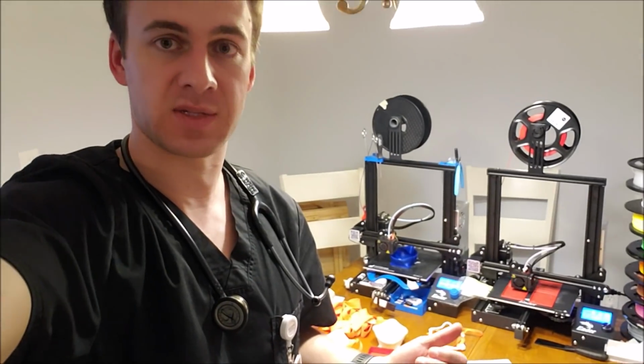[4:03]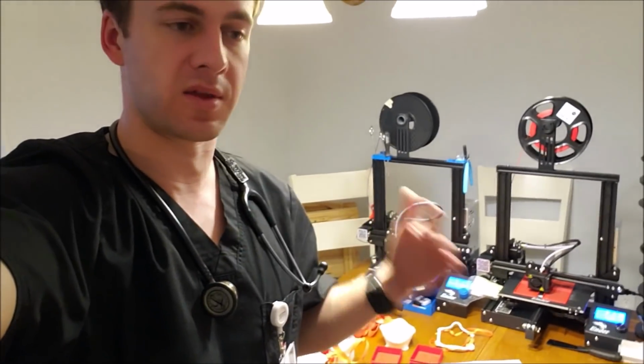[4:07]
I'm going to be building a UVC chamber to also further disinfect the mask, and then we'll just replace the filter piece. The filter pieces take 2 hours to print, and the masks take about 5. You can also adjust the width and fine tune it in Cura. They're Ender 3 printers by Creality. They're the best bang for your buck that I was able to find. They're $220. You put them together yourself, takes about 3 or 4 hours, but then you've got a printer that's much better than any other in that price range.
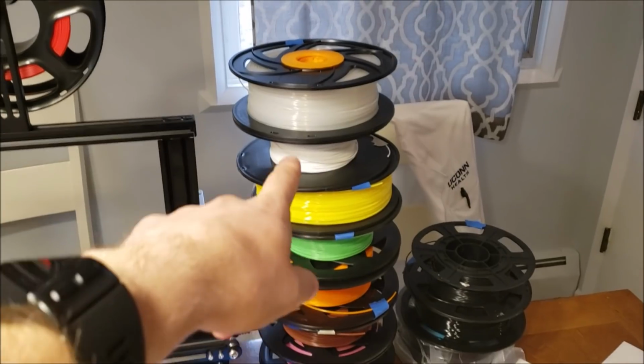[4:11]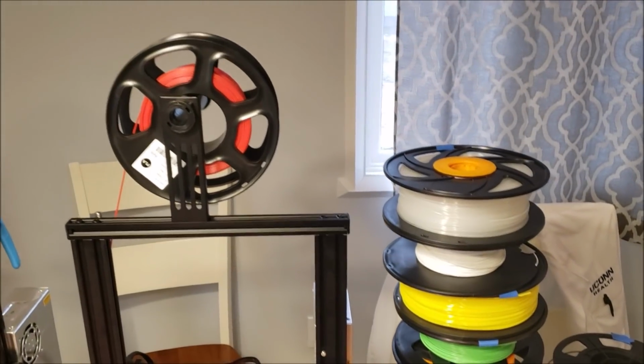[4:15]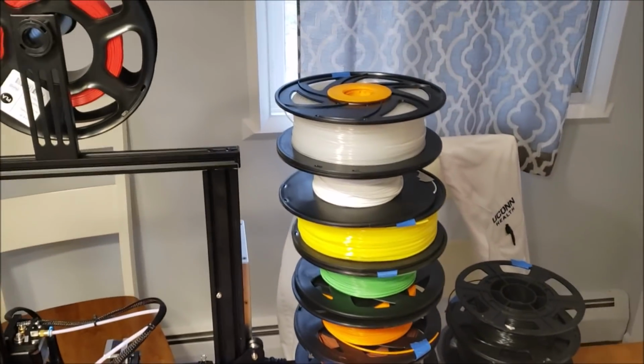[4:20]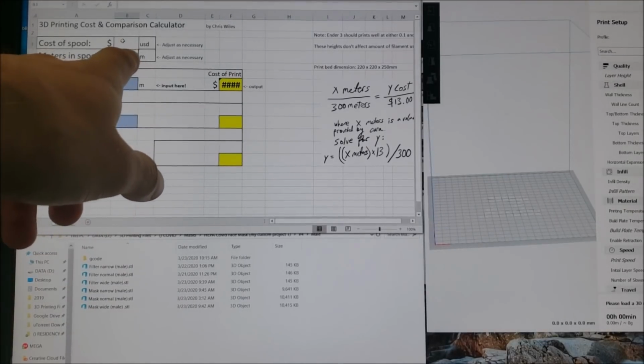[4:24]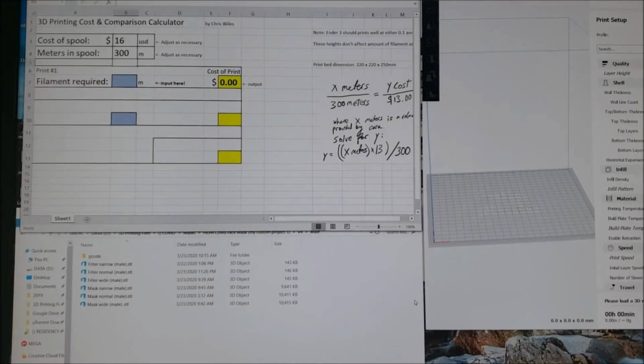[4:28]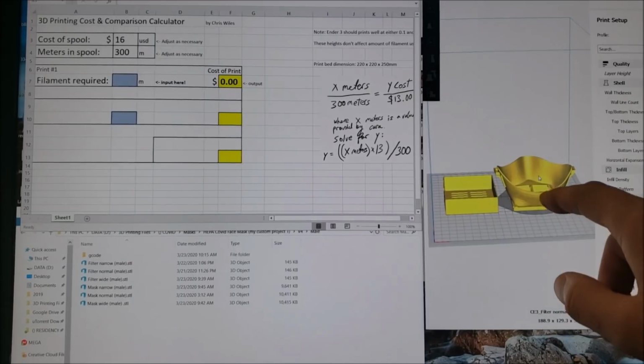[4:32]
They work well. You can just have them running in batches. PLA filament, they're 1 kilogram or 2.2 pounds. They are 300 meters. Search any of that on eBay, Amazon, and you'll find them. To calculate the price of PLA plastic per mask, I'm going to put in the price I paid for a spool, the number of meters, and then I'm going to come over to Cura Slicer, and I'm going to put in a normal male mask and filter.
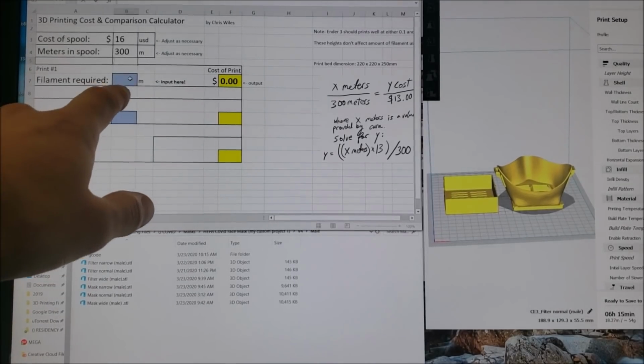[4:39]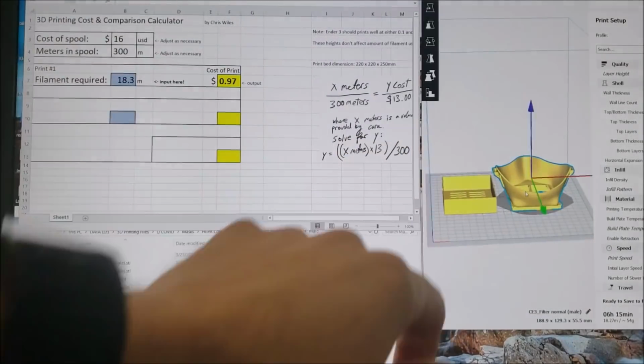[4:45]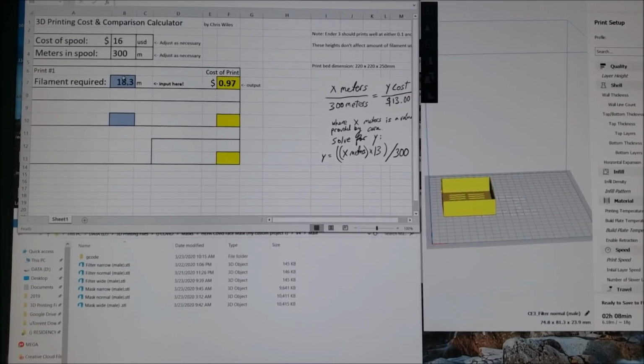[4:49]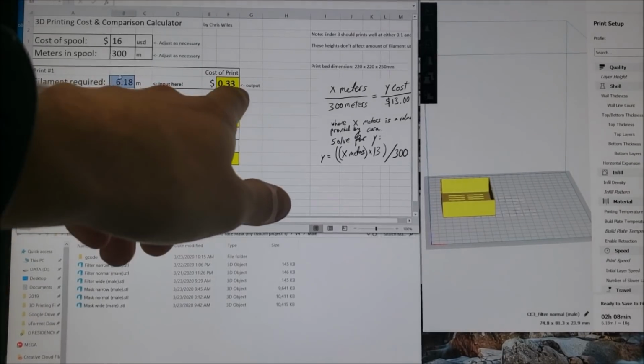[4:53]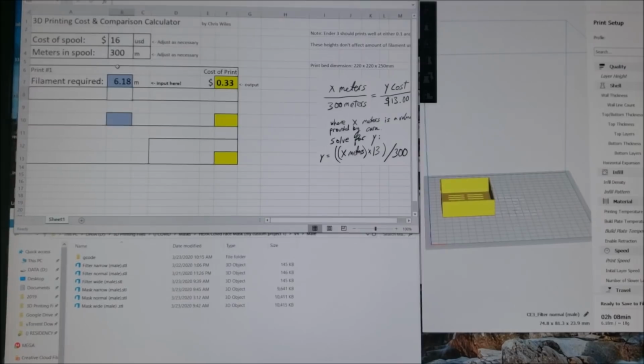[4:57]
I'm going to slice them. It will tell me how many meters of filament that takes. 18.27. I type that in here, and you can see that the total price of a mask is 97 cents for both parts together. If I slice just the filter cartridge, 6.18 meters of filament, that costs 33 cents for a replacement filter cartridge. Now, we calculated that the filter material is about 40 cents. So for about 75 cents, you can have a new cartridge.
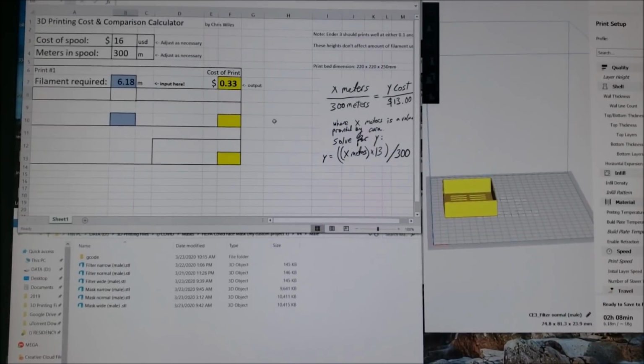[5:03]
There are a lot of 3D printers out there that could be running 24/7 right now and making a big difference. CDC says you can wear this during this time of national emergency. Once that's over, you may no longer wear homemade masks. Create these at your own risk. These cannot be sold for profit. And please continue to improve upon it.
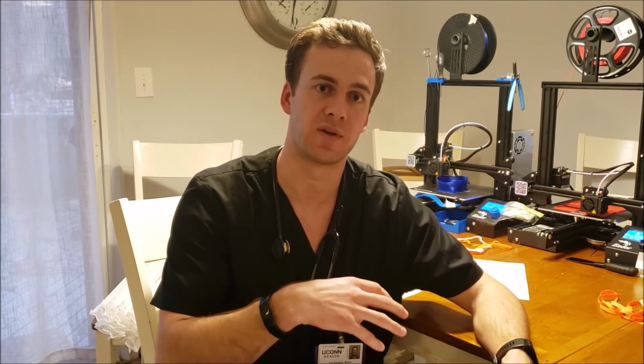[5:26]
I started with someone else's file. His name is Kvatthro. Thingiverse is 422563. Thank you, Kvatthro, for your contribution. These are to be used as a last resort only per the CDC.
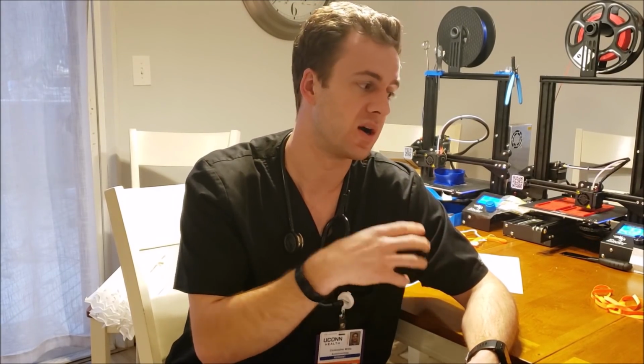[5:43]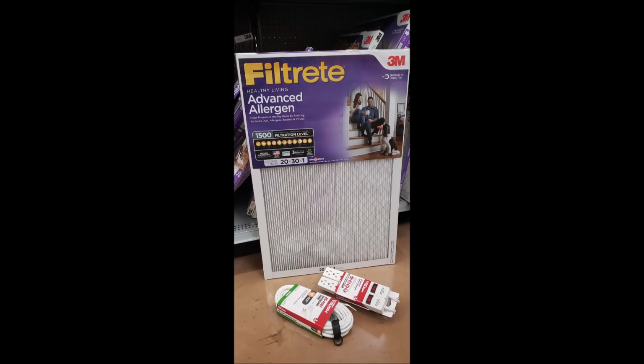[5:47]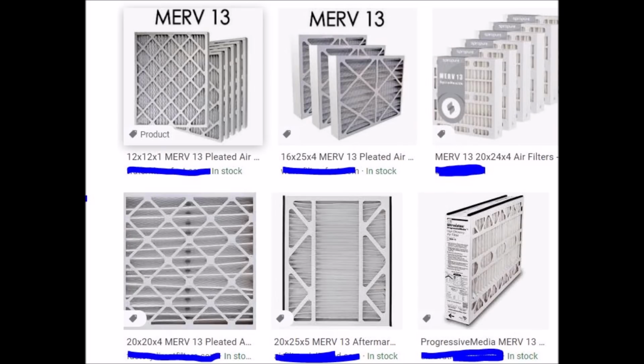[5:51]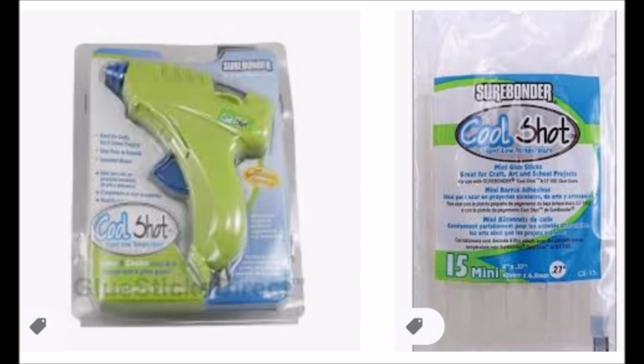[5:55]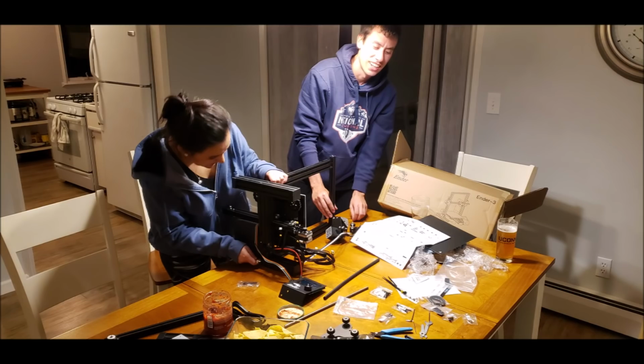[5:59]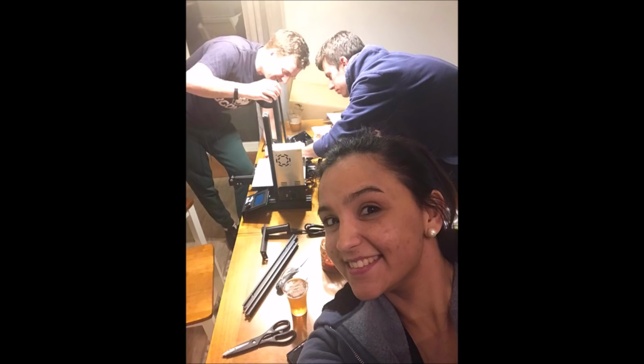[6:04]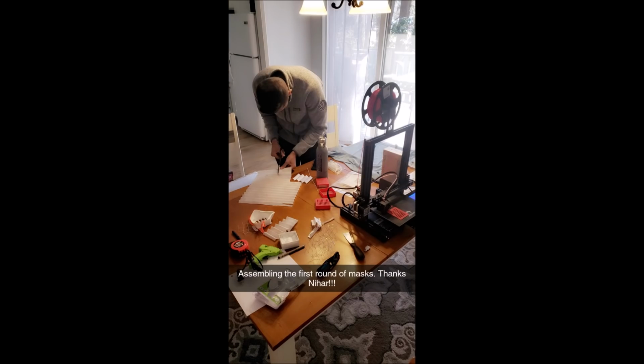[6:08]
Every hospital in the country gets 10 printers and makes 40 masks a day, and they're reusable. And you clean the masks with either UV light or bleach. And then you can get everyone together and get these filters, the 1500 MPR MERV 12 equivalents. And then here is the MERV 13s. All of them are pretty similar. Here's the cool low temperature glue gun that doesn't melt the PLA. Here's a few of my friends helping me put together my most recent 3D printer that arrived. And here's our first assembly of the prototypes.
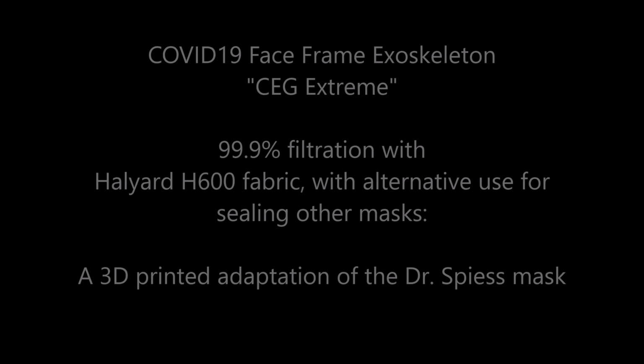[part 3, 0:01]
I'm Dr. Christopher Wiles. I'm here with Gus Mazzocca at the Musculoskeletal Institute at UConn. We're going to be going over how to use this face frame exoskeleton, the CEG Extreme.
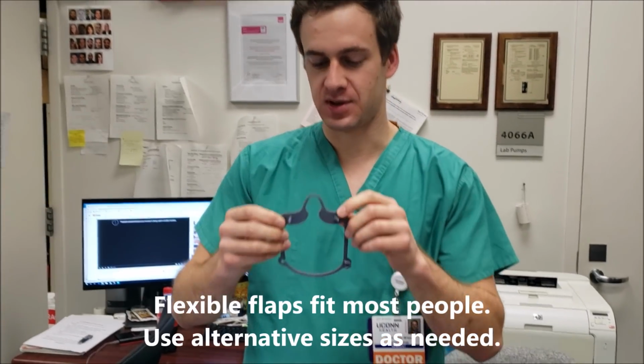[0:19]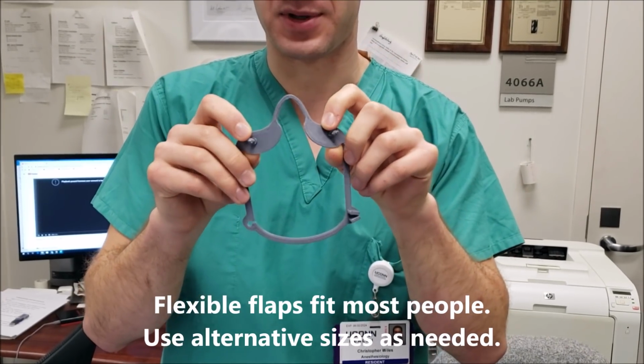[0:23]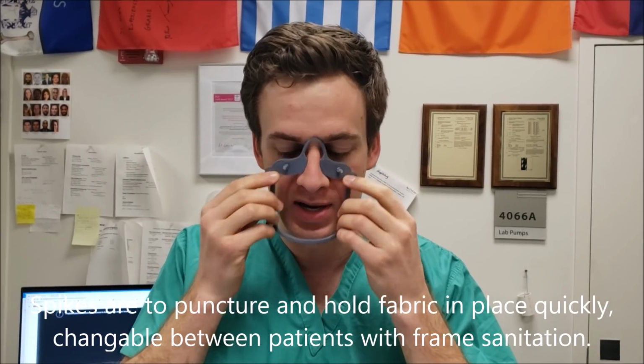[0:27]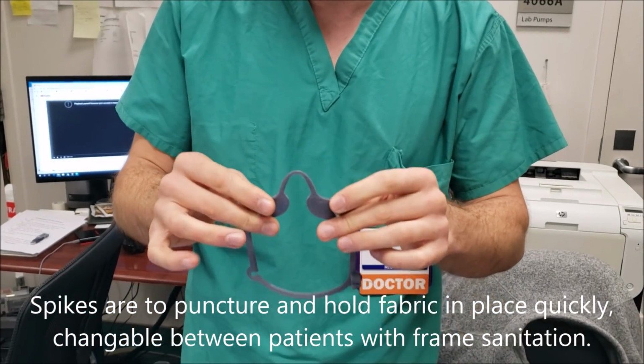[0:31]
Over the design features, you've got these flaps that come down but still remain flexible enough to conform to multiple size faces and shapes. They also block airflow, and then you have spikes. These will allow you to fold over the material and press it over these to hold it in place.
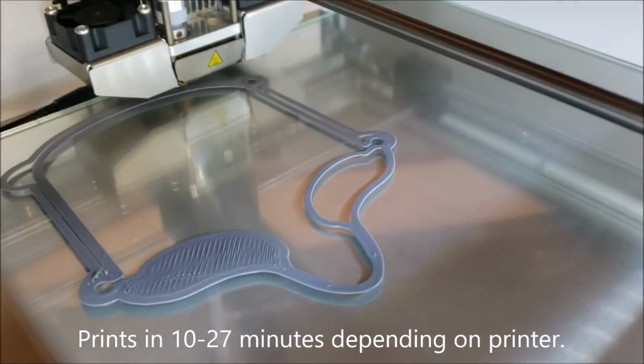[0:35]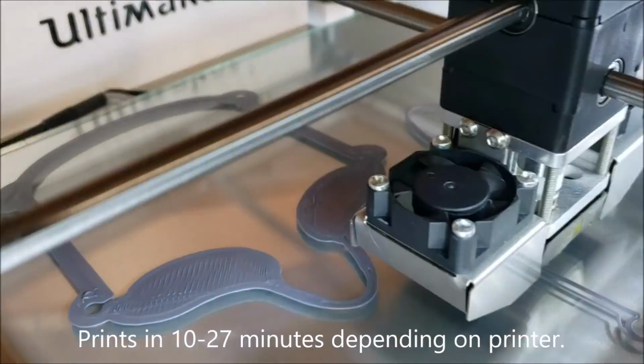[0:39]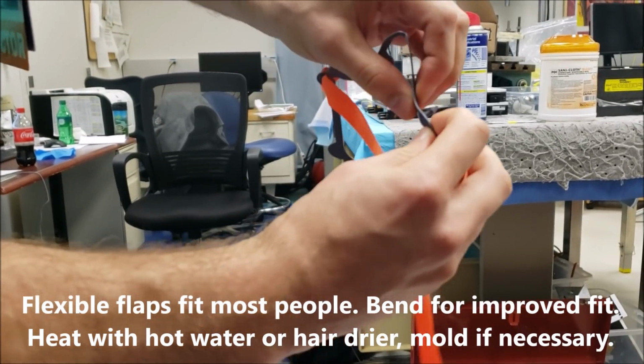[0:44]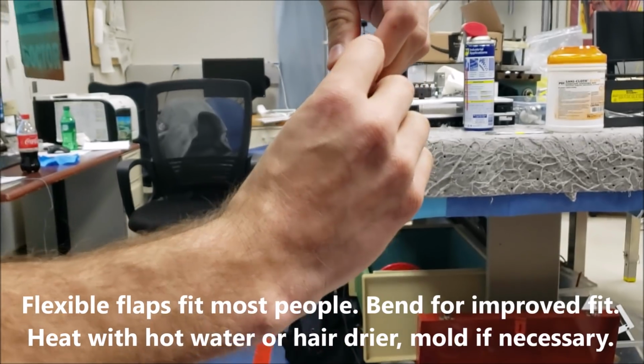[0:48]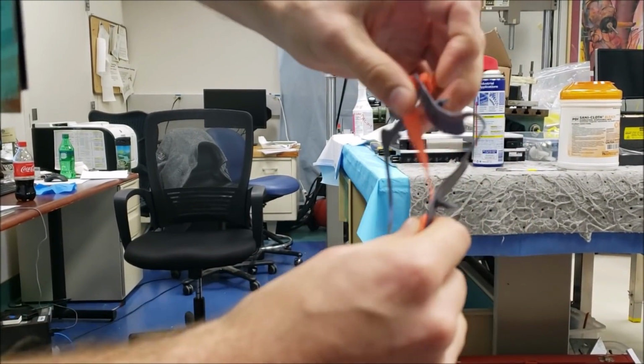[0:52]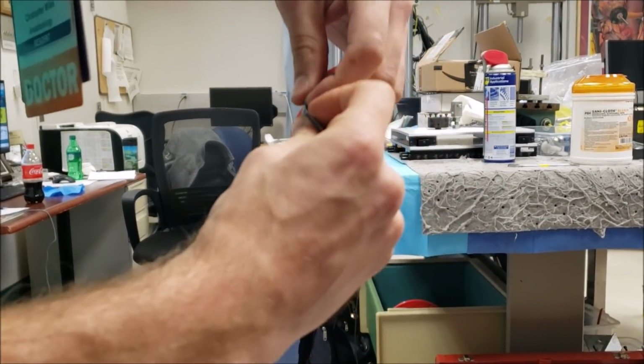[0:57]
If you bend these in, you'll get a much better seal against your face. This does maintain its form, but you can hit this with a hairdryer as well, or do this right as it comes off of the hot plate of your 3D printer. But that's also why we made it pliable, so it's not thick. Right. If you make it too thick, it won't do this.
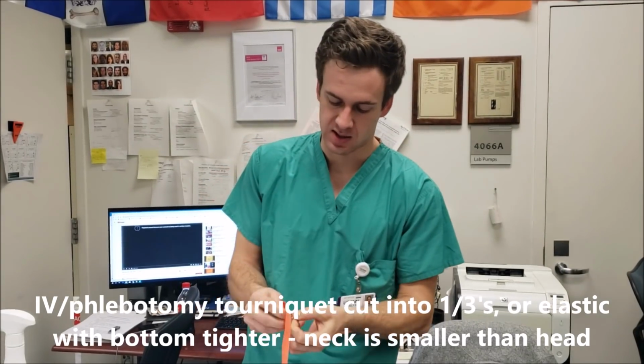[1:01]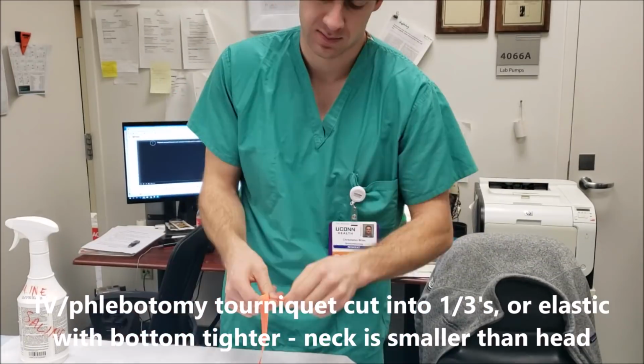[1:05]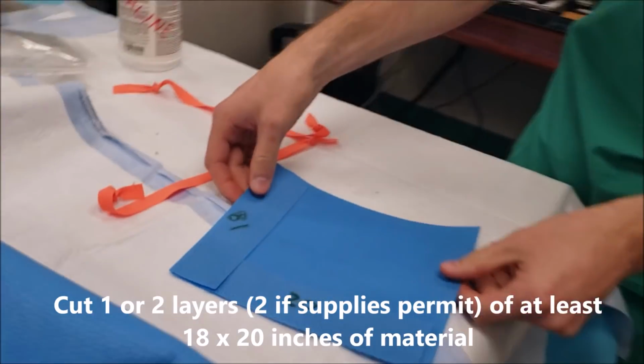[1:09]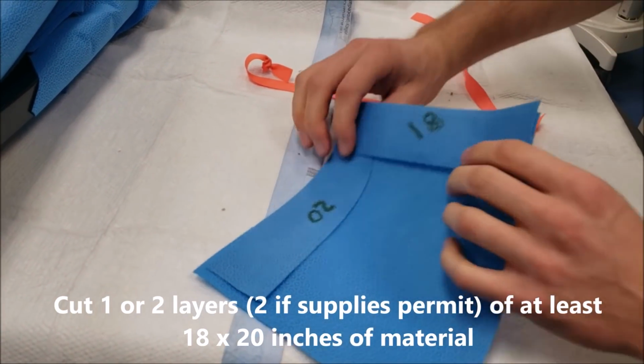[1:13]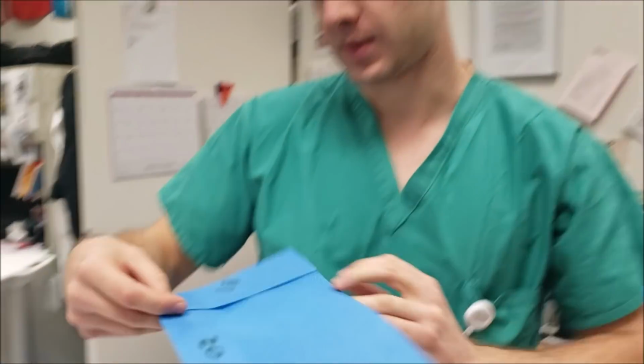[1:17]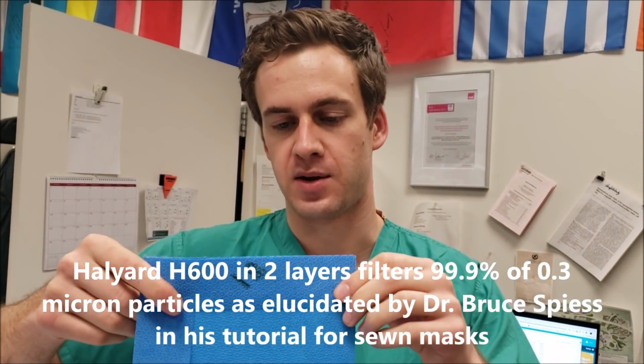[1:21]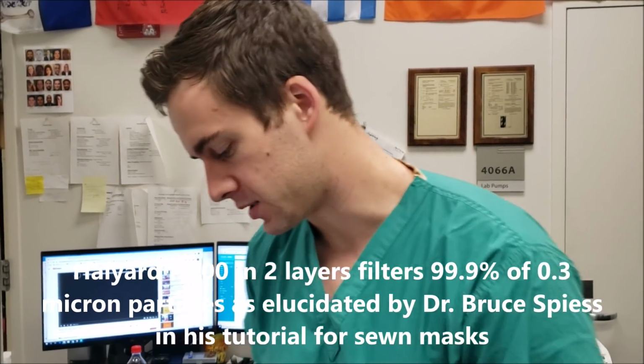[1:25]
Tie a knot in either end of the tourniquet that you've cut into thirds. Now the piece you're going to cut is 18 by 20 inches, and that's going to be in the direction of 20 being vertically on your face. And what's the material, Chris? This is Halyard H600 operating room tray wrap. Go over the installation of the Halyard H600 material.
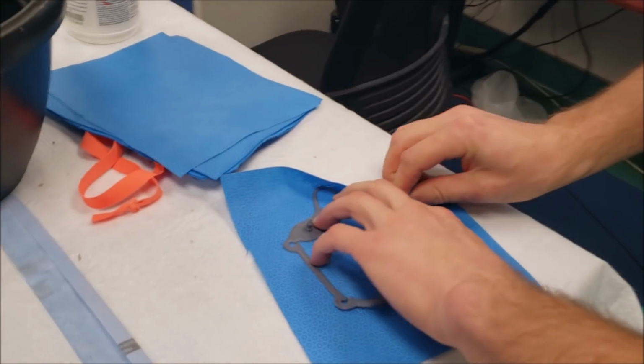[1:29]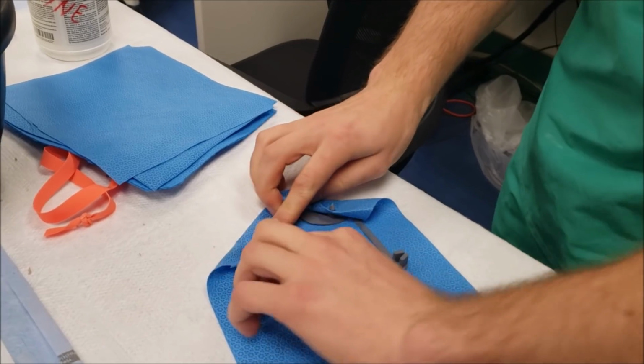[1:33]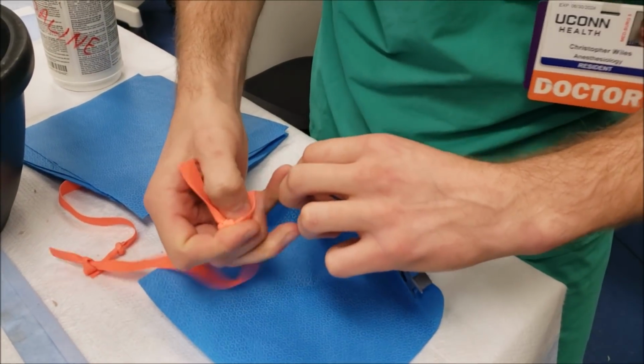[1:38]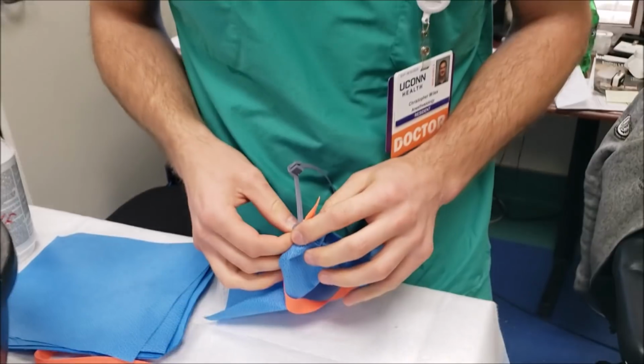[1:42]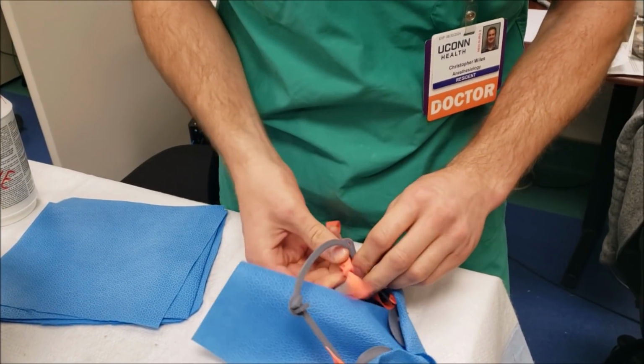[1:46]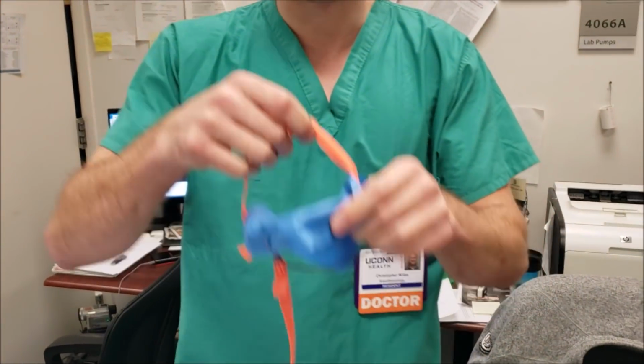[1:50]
You can take this, press it over. Take this one, press it over. Take a strap. And the knots are on the outside, correct? Yeah, the knots are on the outside. And then the last one, same thing, come up from below, slide into the notch. Now this way, you can put just one strap over your head.
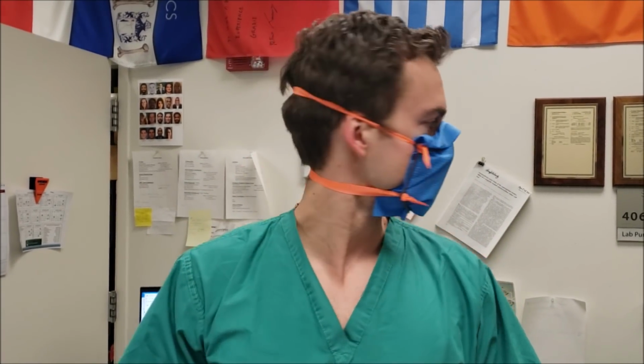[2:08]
Makes a good fit. This can either sit in front of your chin or below, depending on the height of your face. This can wrap around. You find the slot, that's it. Turn to the side, turn to the other side. Move your head up and down or all around.
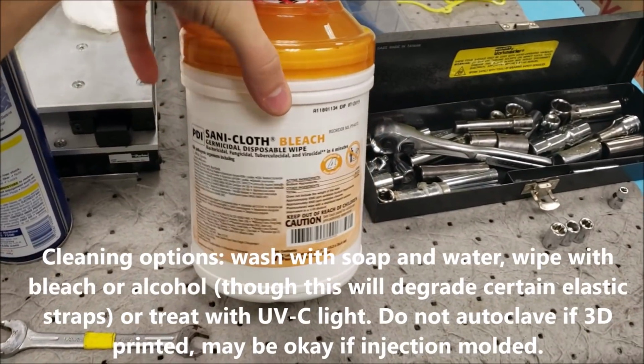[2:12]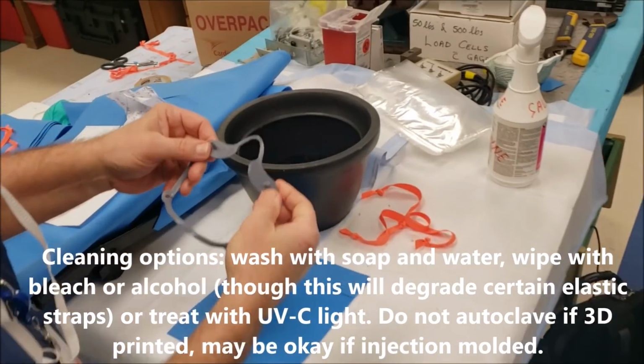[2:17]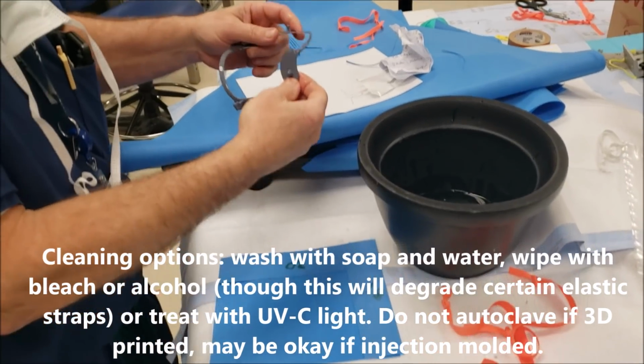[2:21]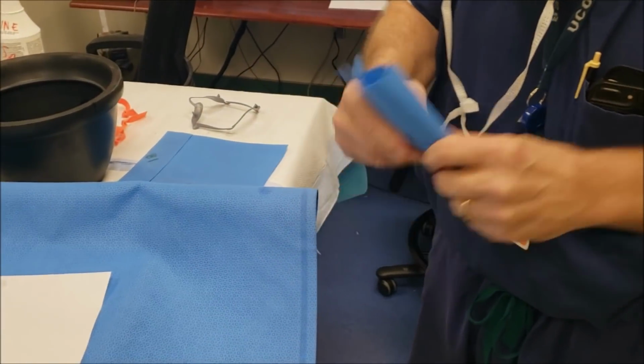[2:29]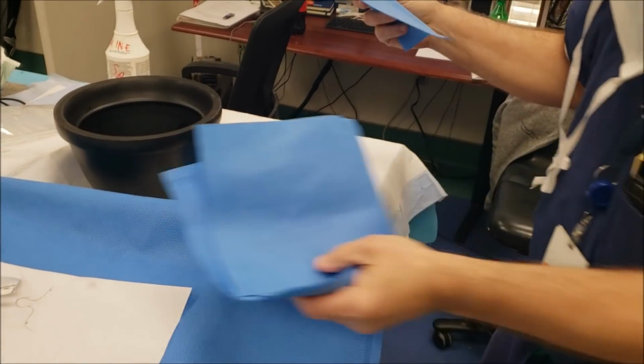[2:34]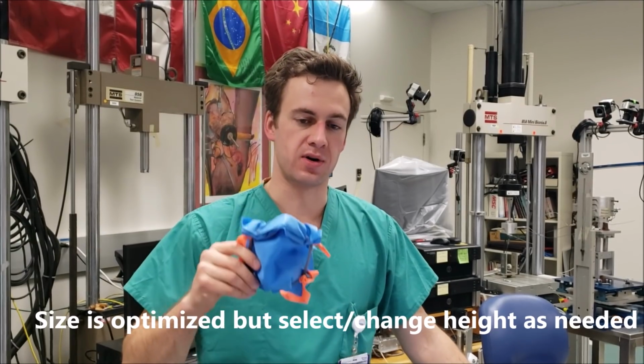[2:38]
You can also wipe your mask frame down with bleach. Take this, dip it in alcohol, sterilize it, and then put a new sheet on it. If you're in a COVID ward and you have this on with a face shield over it, you can go room to room if that's your hospital policy. You can have multiple sheets in your pocket, so between cases or between patients, you can just put a new sheet on.
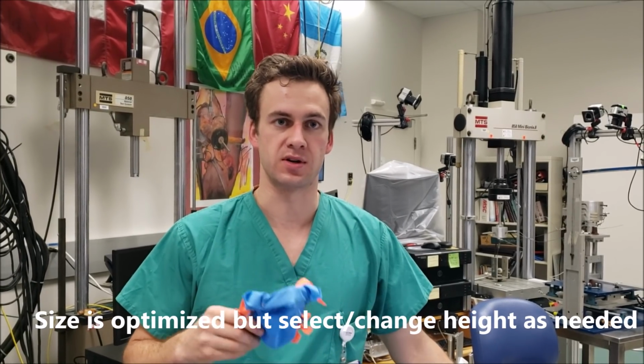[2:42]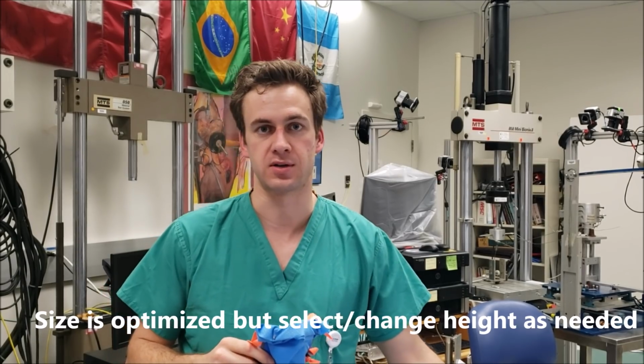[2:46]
In the file pack, there's a shorter face version. But if you need to customize further, you can use your slicer software, such as Ultimaker or Cura, to change the dimensions, width, or height, however you need for your application or your face.
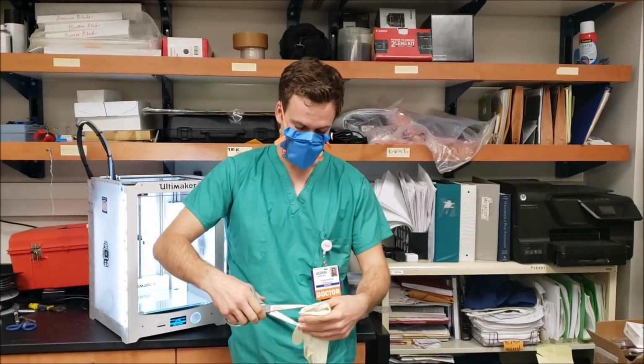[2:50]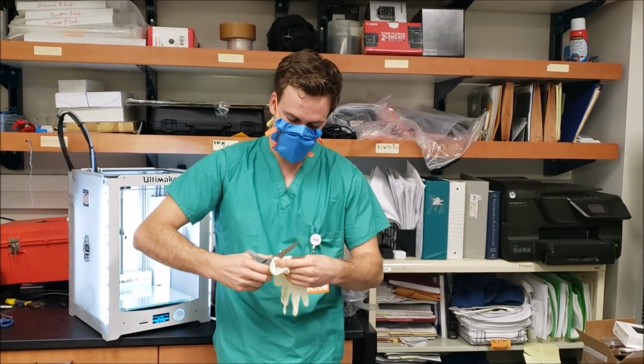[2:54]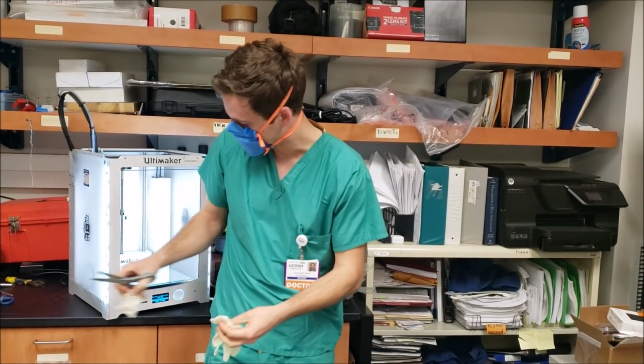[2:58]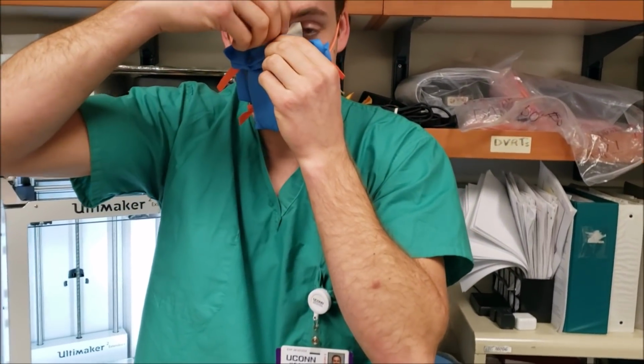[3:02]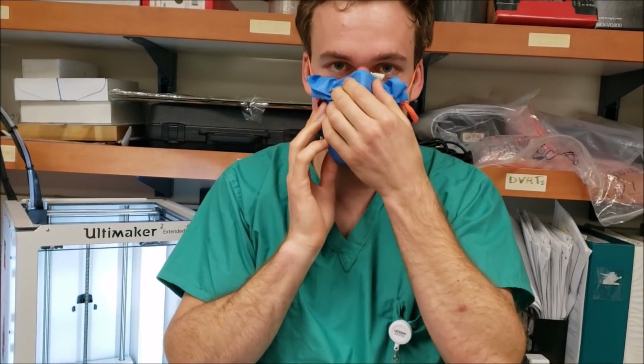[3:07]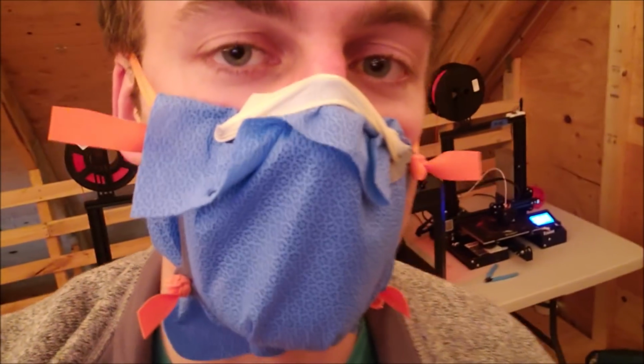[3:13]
In a few days, this may begin to cause irritation on your nose, if not sooner. There have been multiple fixes I've seen people doing, using Mepilex or a Band-Aid. I found that you can take a piece of a glove and press this on the bridge of your nose, have it just pressed in like that. You still get a good seal, and that kind of takes a lot of the edge off without having something sticky that can pull your skin off. The key is the wrist area of the glove on the spikes.
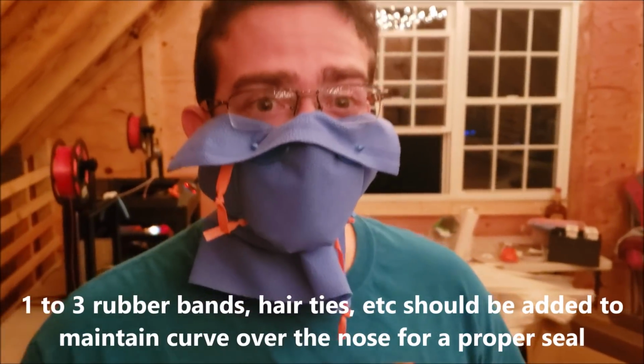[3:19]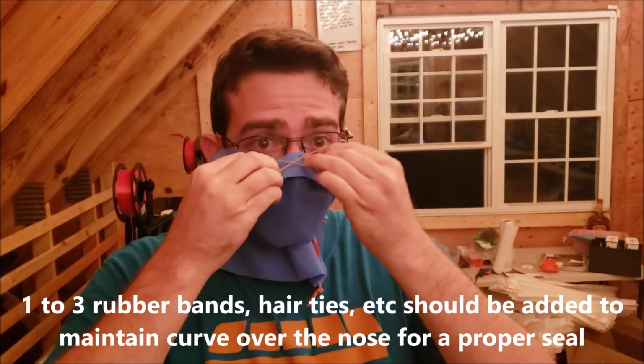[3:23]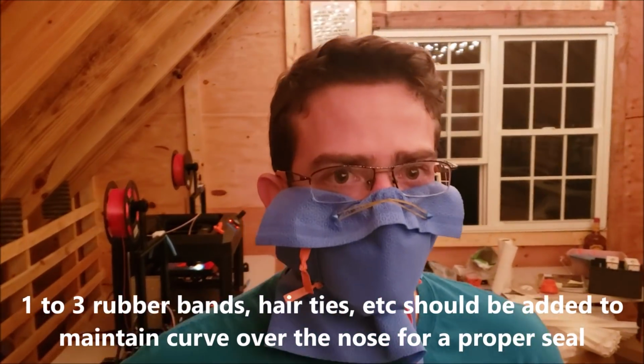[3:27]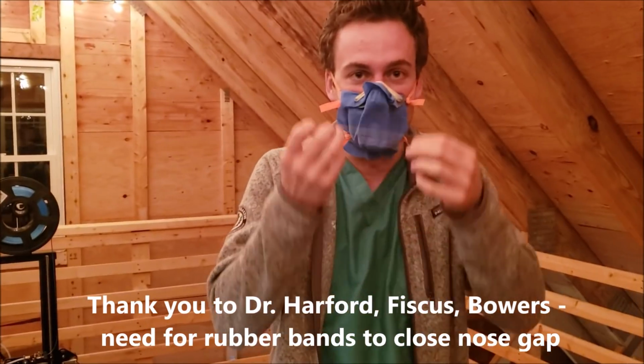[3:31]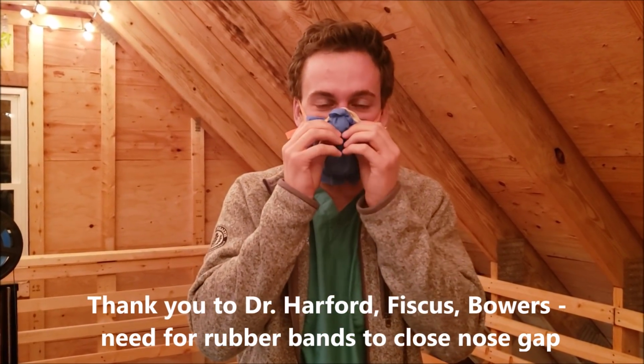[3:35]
So for the people with glasses, sometimes that can distort the nose. So you put the rubber band here, and tighten in the nose, which works quite well. And if that's not enough, you can add an additional rubber band. And it really does make a better seal on the nose.
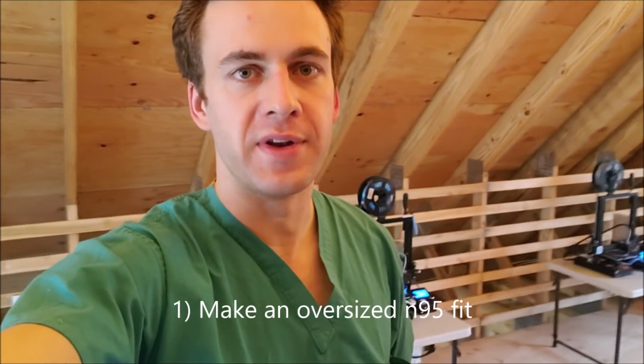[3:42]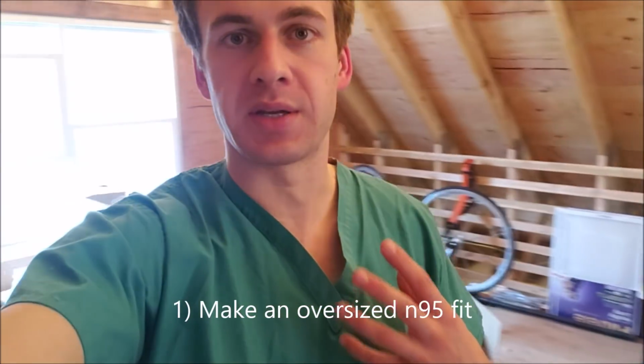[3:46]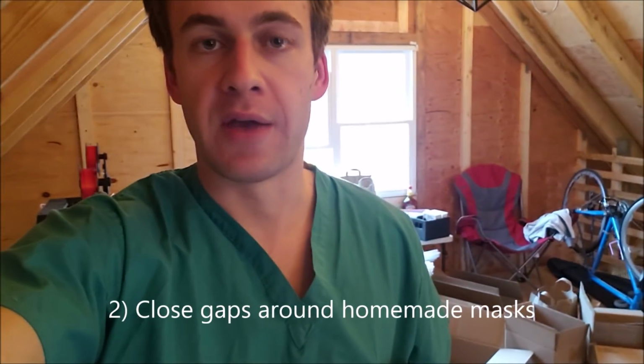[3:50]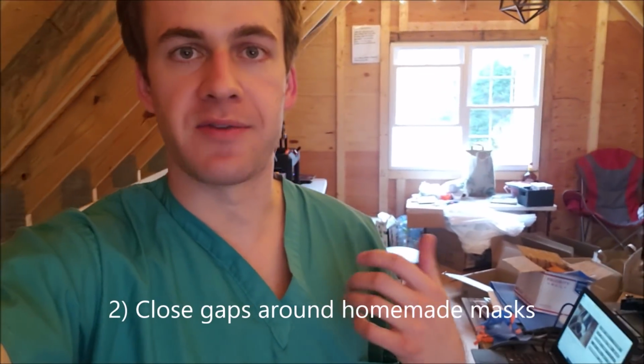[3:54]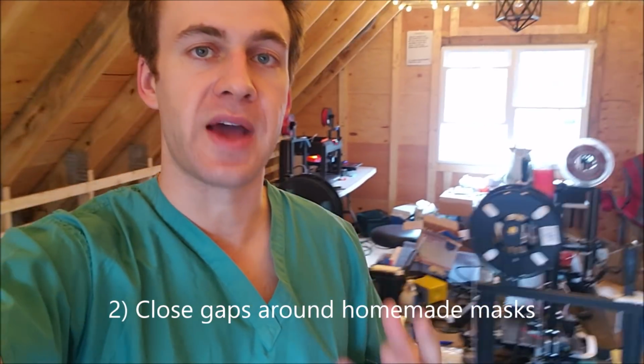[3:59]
I just want to outline three additional applications for this mask. One, if you have an N95 that doesn't fit your face properly, as in it's too big, this can help create a seal around the edges by pressing the N95 to your face more. Two, if you're making homemade masks, hopefully you're not just using cotton, you're using cotton and say a vacuum cleaner bag or some other material that actually filters viruses. This can serve to make a seal around the edges so that all the air actually goes through that filter you made and doesn't leak around the edges.
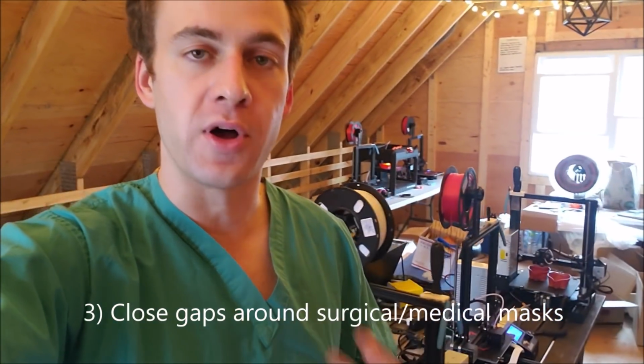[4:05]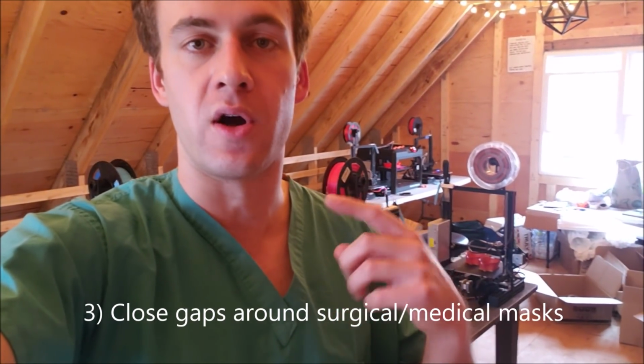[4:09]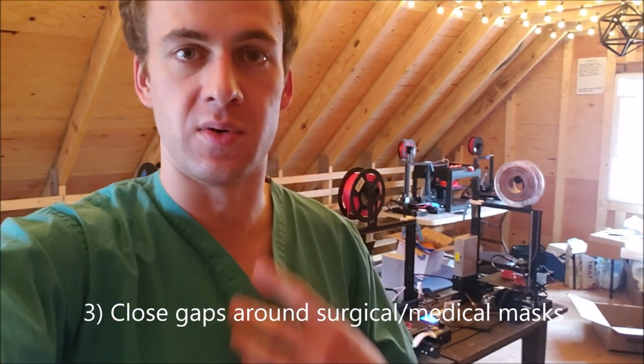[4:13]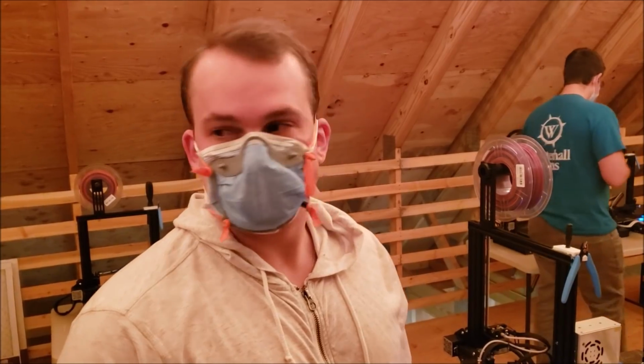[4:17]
And three, if all you have access to is a surgical mask and you want one extra level of security knowing that all the air is actually passing through them, this mask can be worn for that purpose too. So this is to make the surgical mask fit a little tighter. Look to the side, other side, look up. Though just know this does not replace an N95 and always use at your own risk.
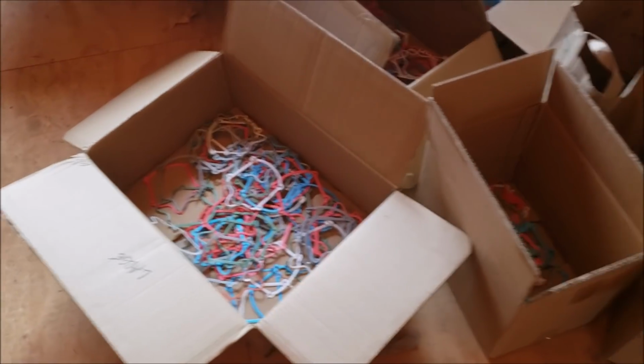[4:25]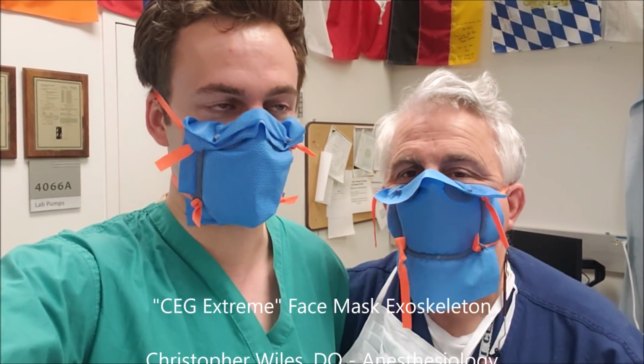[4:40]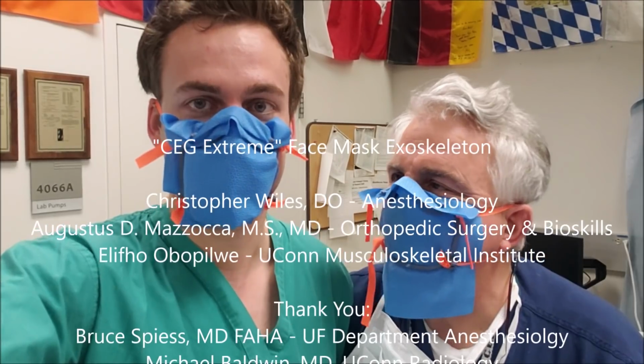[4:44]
Another option is adding some tape to the rim of the nose or Play-Doh around the edges. Please get creative and let me know what worked for you, and we can all share some information about what works best. University of Florida. Yep. Great idea. Go Gators.
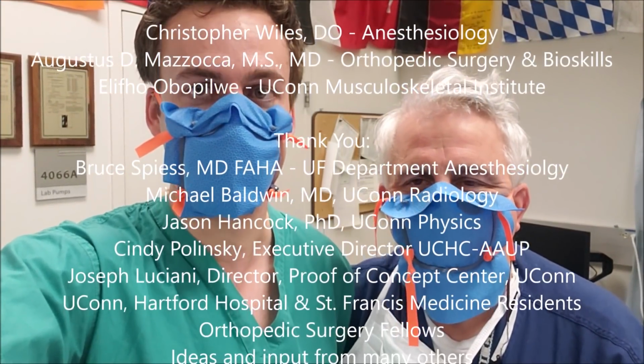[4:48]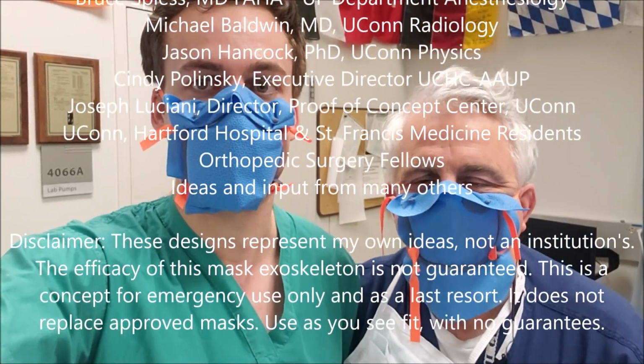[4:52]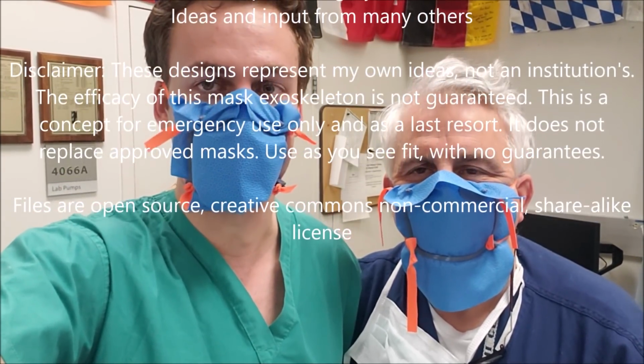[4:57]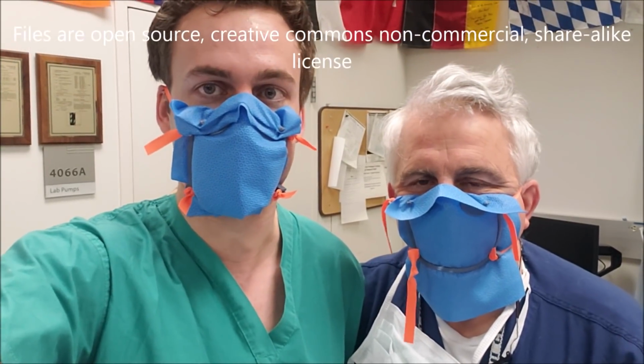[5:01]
So we're really happy to be able to work with a lot of people on this, and we want to get it out open source immediately. And any revisions would be updated. Any ideas from anyone else would be welcome. Use this at your own risk, and understand that nothing is a perfect replacement for a real mask, but we're just trying to do the best we can to provide what we can as fast as we can to you.